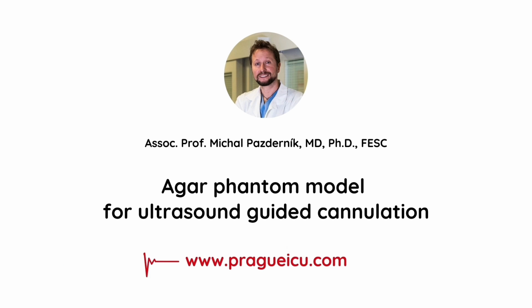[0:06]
Hi guys, I'm Mikhail from Prague ICU, and today I'm going to show you how to prepare the agar phantom model for ultrasound-guided cannulation.
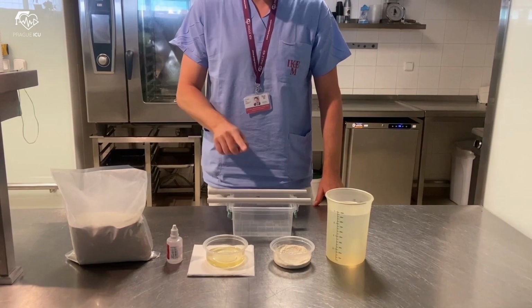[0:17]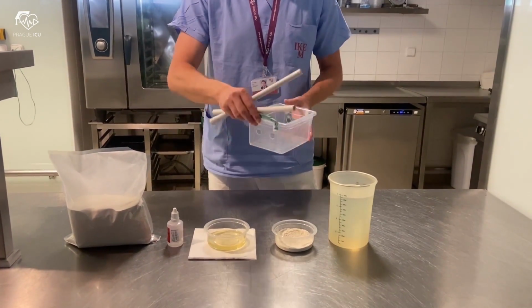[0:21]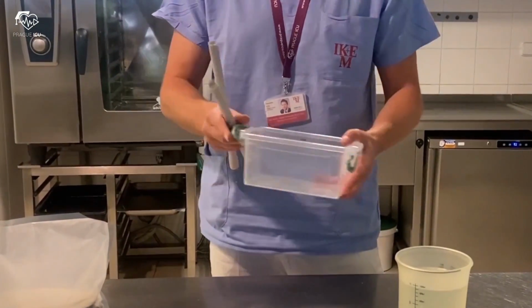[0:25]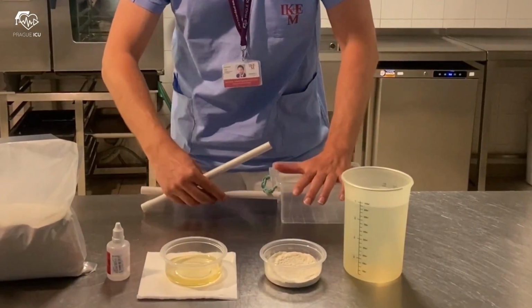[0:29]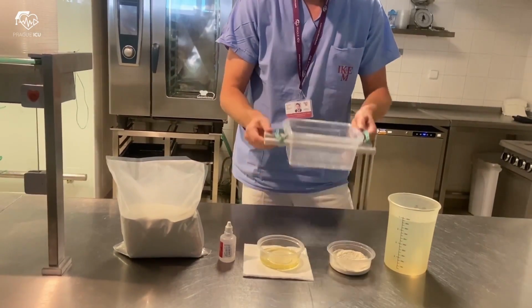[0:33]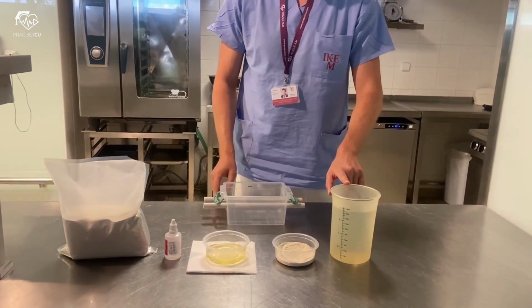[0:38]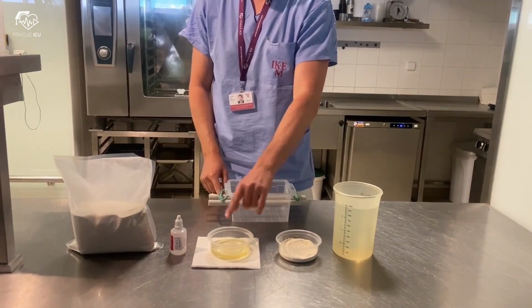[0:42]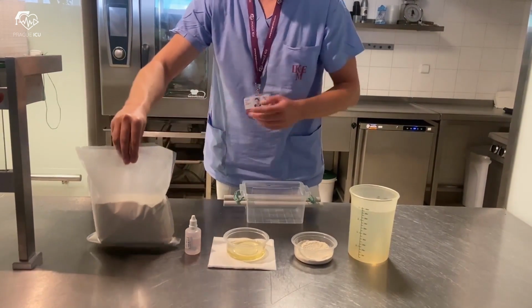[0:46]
Which components do we need for preparation of the agar model? First of all, a 2 liter plastic container with prepared holes on the sides. 2 plastic tubes as vessel analogs are placed through the box from end to end. Then we have here a measuring jug for water, wheat flour, oil, conservant, and finally agar, 900 grams over square centimeters.
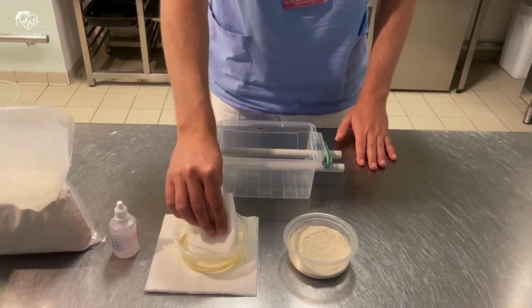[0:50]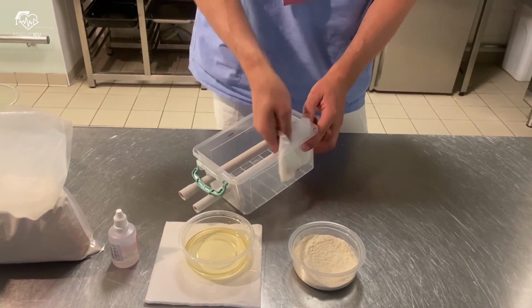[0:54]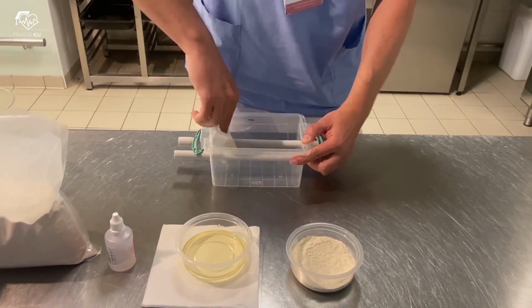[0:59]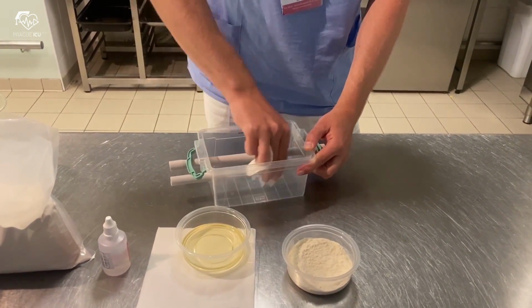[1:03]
Before preparing the agar liquid, lubricate the walls of the plastic box and the tubes with oil. This will help with easy removal of the plastic tubes and the agar model itself from the box at the end.
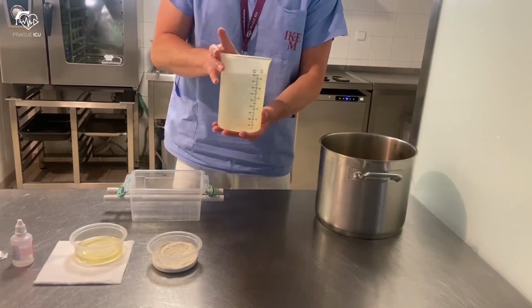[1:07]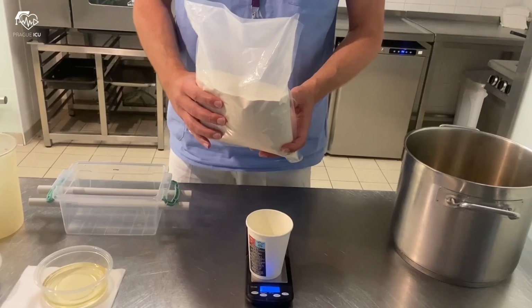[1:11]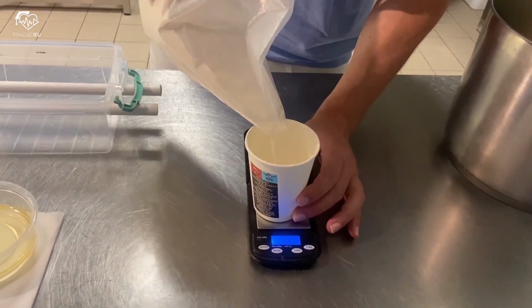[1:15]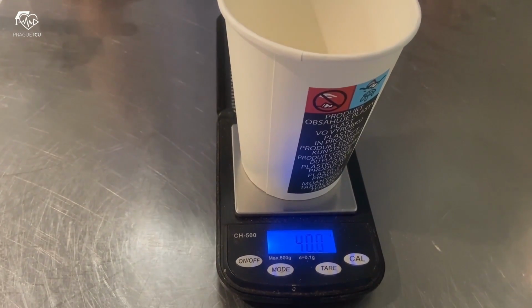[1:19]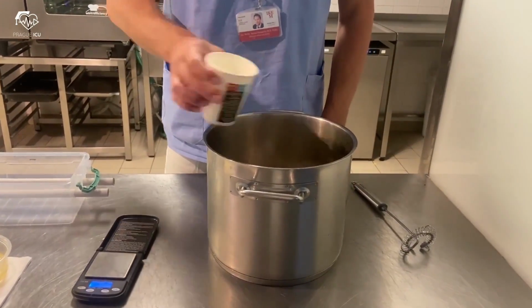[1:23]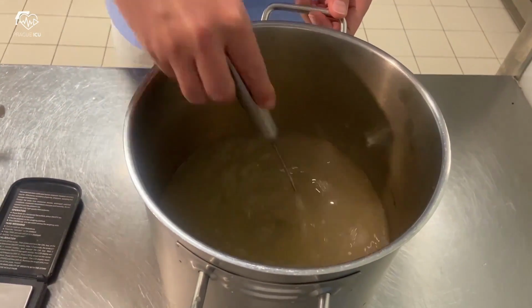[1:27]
Pour 2 liters of cold water into the pot. For the phantom, we use 20 grams of agar per 1 liter of water. So, in our case, mix 2 liters of cold water with 40 grams of agar. Stir until agar is suspended in water without clumps.
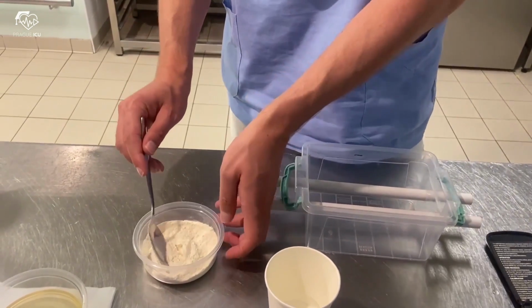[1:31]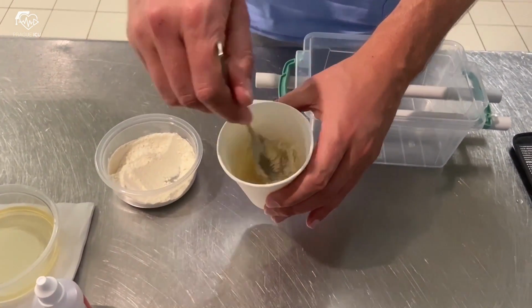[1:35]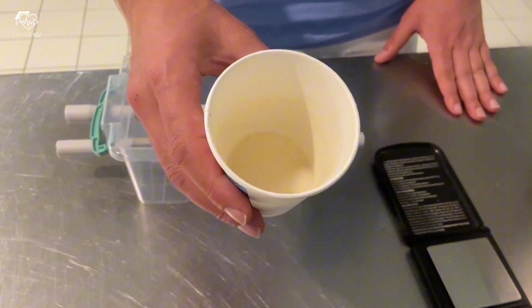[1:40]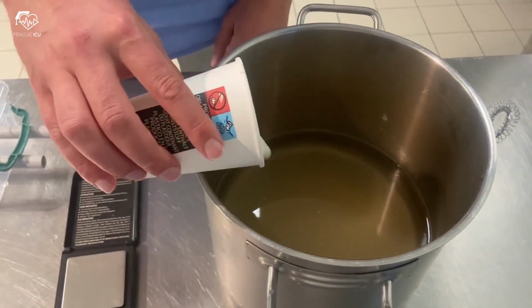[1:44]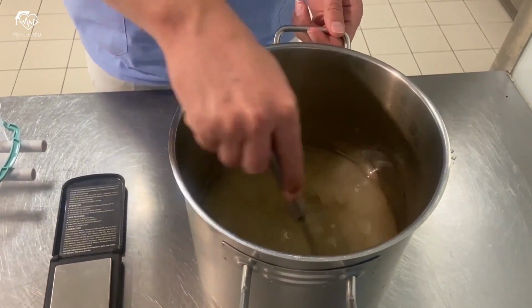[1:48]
Then sprinkle 1 teaspoon of flour into the mix. Again, try to avoid clumping. Flour is quite useful in order to increase the opacity of the phantom. Add it to the agar mixture and stir it thoroughly again.
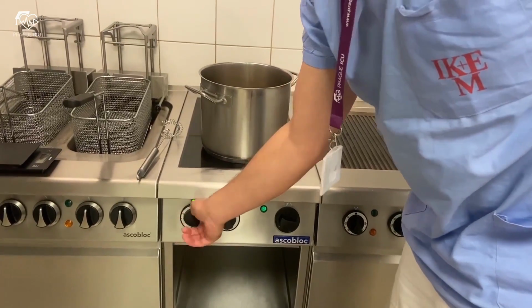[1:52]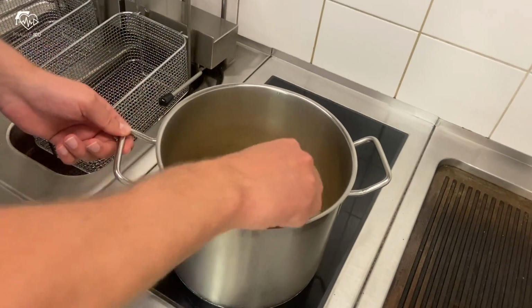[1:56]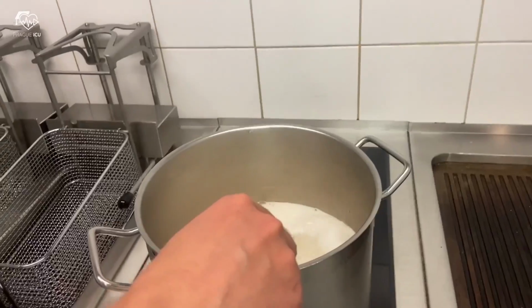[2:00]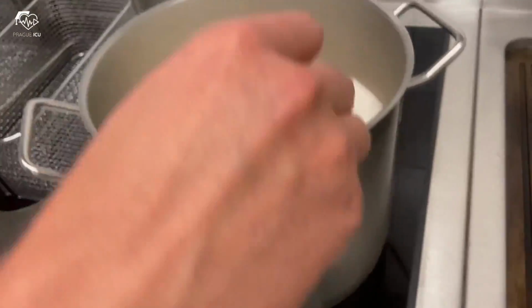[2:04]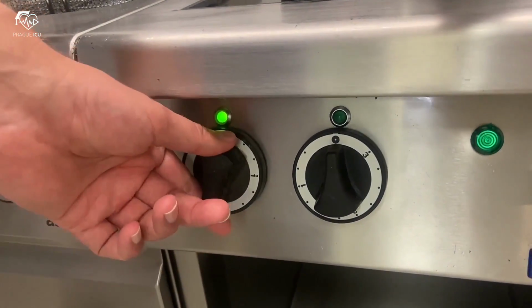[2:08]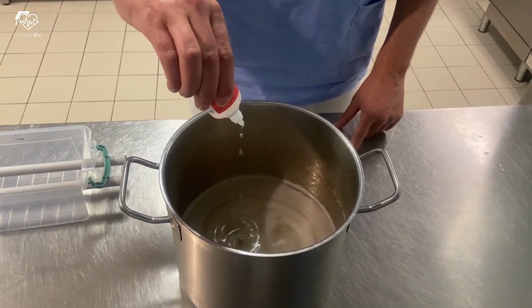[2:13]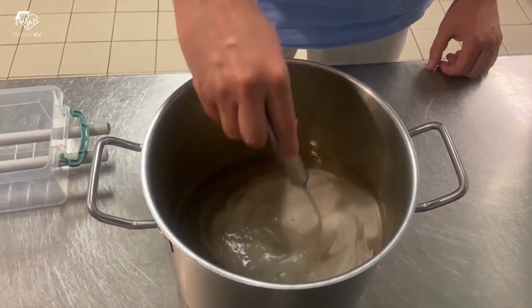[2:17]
Then bring the whole mixture to boil while stirring periodically until it's homogenized. When the mixture starts to boil, reduce the heat to minimum and continue boiling for another approximately 2 minutes. Add a bit of conservant, glycerol, that will prolong the durability of the model.
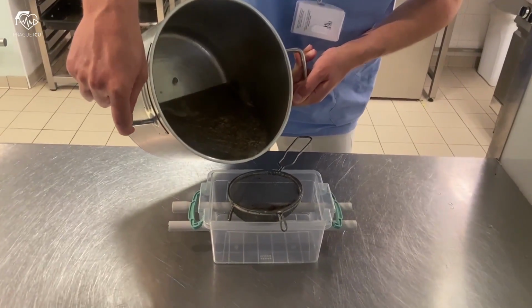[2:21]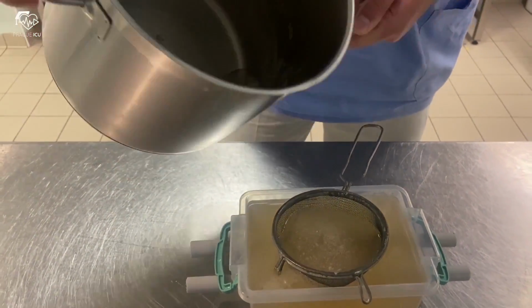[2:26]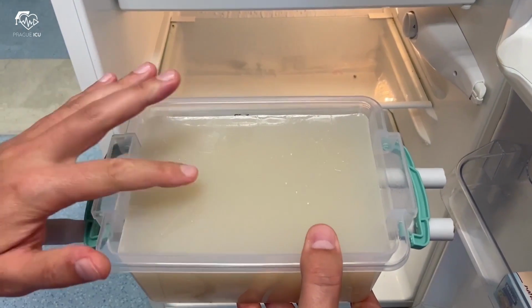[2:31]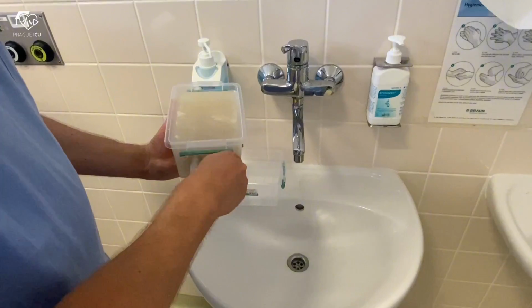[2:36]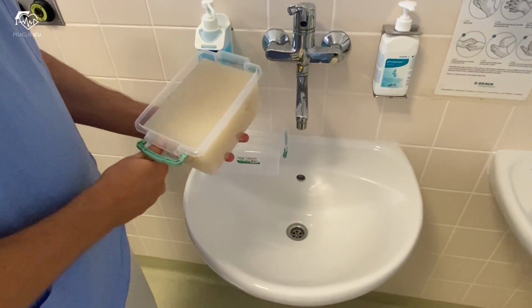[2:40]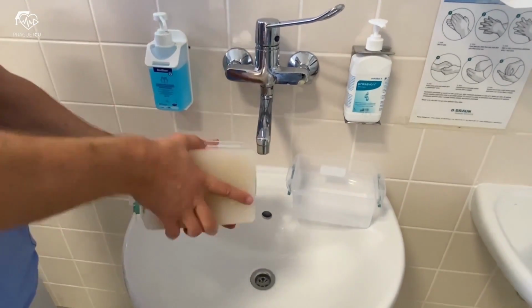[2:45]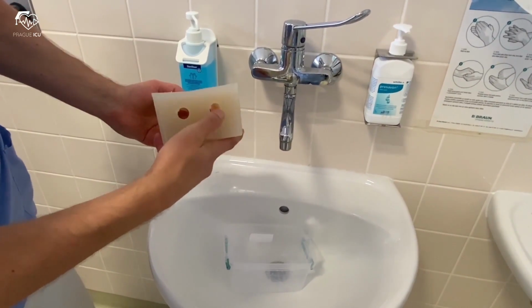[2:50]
Use the kitchen sieve to remove the remaining solid particles while pouring the mixture into the plastic container. Then place the phantom into the refrigerator for 1 hour. Once the model solidifies, remove the plastic tubes. You now have a model with 2 air-filled tunnels resembling vessels.
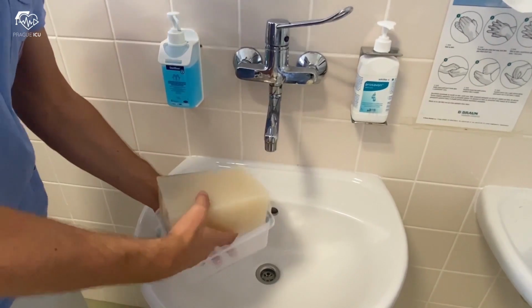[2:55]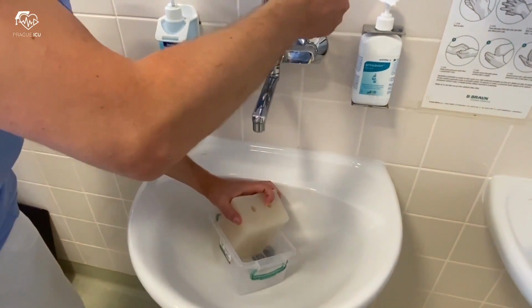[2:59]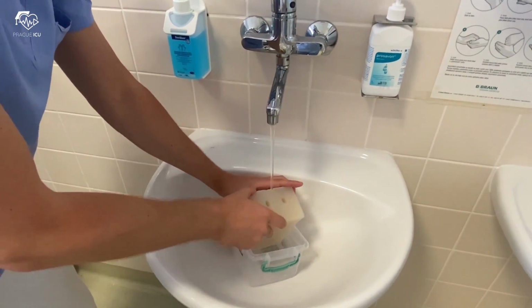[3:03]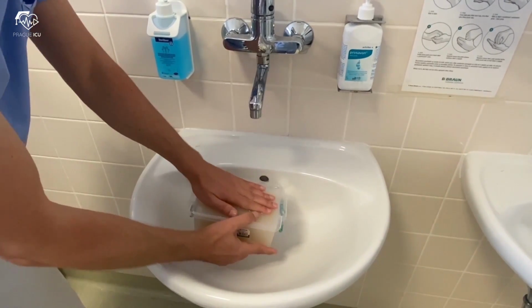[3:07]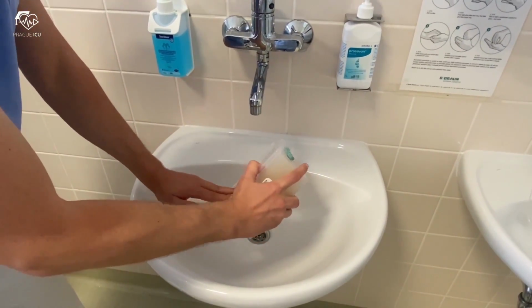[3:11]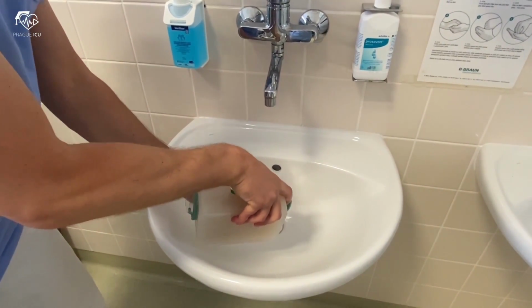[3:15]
Put the model into a new plastic box without holes at the ends. While in the container, fill the vessels with water. Remove excessive air within the vessels by tilting the container. Squeeze air out and refill the vessels with water.
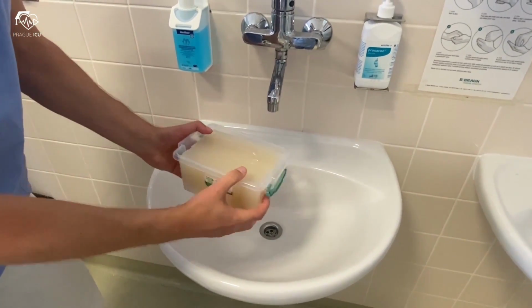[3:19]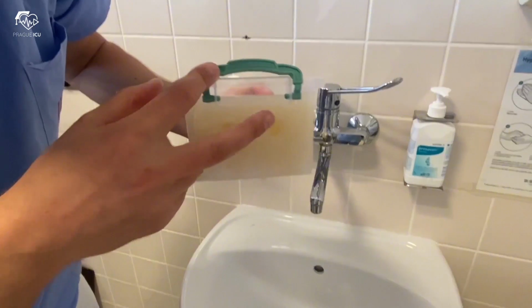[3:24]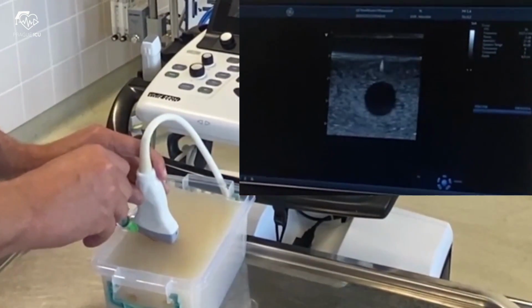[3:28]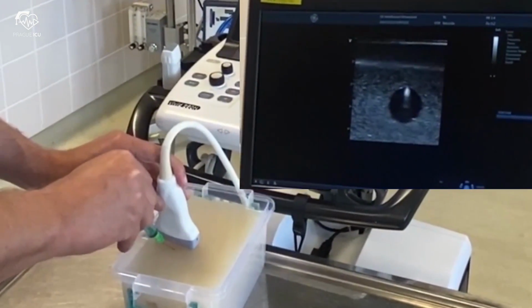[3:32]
The phantom is now ready to be used as a training model for ultrasound-guided intravenous cannulation. You can practice both short axis or long axis techniques.